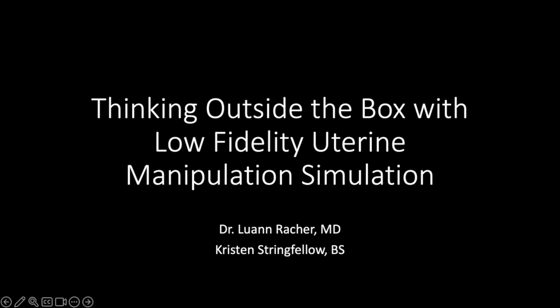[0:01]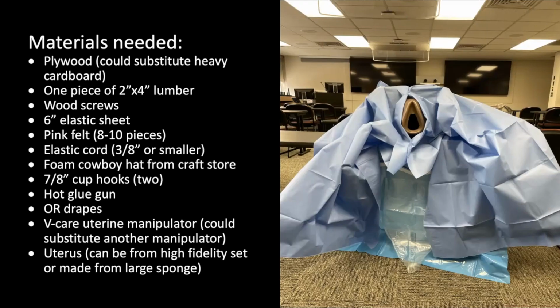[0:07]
In this video, we will demonstrate how to build a uterine manipulation simulation. The materials needed for this project include plywood that could also be substituted for a heavy cardboard, one piece of a 2 by 4 inch piece of lumber, wood screws, a 6-inch elastic sheet, pink felt that we used about
8 to 10 pieces, elastic cord that is 3/8 inch or smaller, a foam cowboy hat from the craft store, 7/8 inch cup hooks. You'll need 2 of these, one for each side of the simulator, hot glue gun, OR drapes, the V-Care uterine manipulator, or you could substitute for whatever manipulator you use at your institution, a uterus, and this could be from a high fidelity set or made from a large sponge if you do not have access to a high fidelity set.
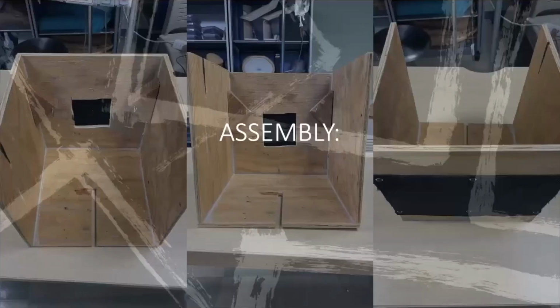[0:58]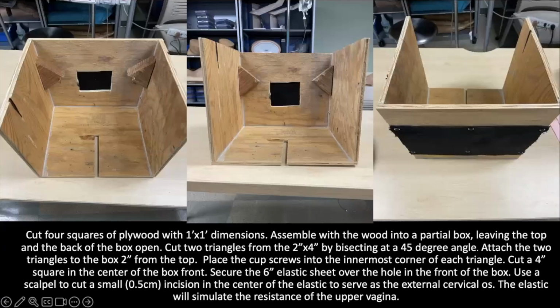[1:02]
To begin, we're going to go through the assembly of the box. To start the assembly, you're going to cut 4 squares of plywood with 1 foot by 1 foot dimensions, and then assemble the wood into a partial box, leaving both the top and the back of the box completely open. You'll then cut 2 triangles from the 2x4 by bisecting it at a 45-degree angle. Attach the 2 triangles to the box about 2 inches from the top of the box.
You're going to place the cup screws onto the innermost corner of each triangle, as depicted in the first and second image clearly. You'll then cut a 4-inch square into the center of the front of the box. You'll secure a 6-inch piece of elastic sheet over the hole in the front of the box, and then you're going to use a scalpel to cut a small hole. We did about a 1/2 centimeter incision into the elastic, and that's going to serve as the external cervical os. The elastic is going to be what simulates the resistance of the upper vagina.
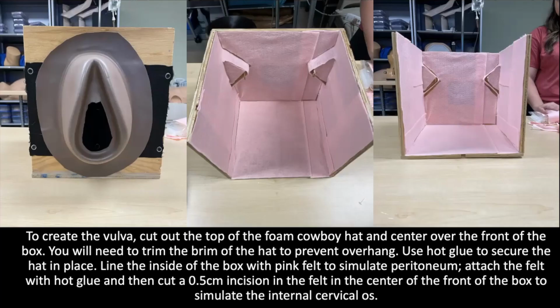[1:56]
In order to create the vulva, what you're going to do is cut the top out of the foam cowboy hat, and then you're going to center that over the front of the box. You will probably need to trim the edge or the brim of the hat in order to prevent any overhang, and then use hot glue to secure that hat in place. Line the inside of the box with pink felt, and this is what's going to simulate the peritoneum, and then attach the felt with hot glue, and you can also cut a 1/2 centimeter incision in the felt just like you did the elastic, in order to simulate the internal cervical os.
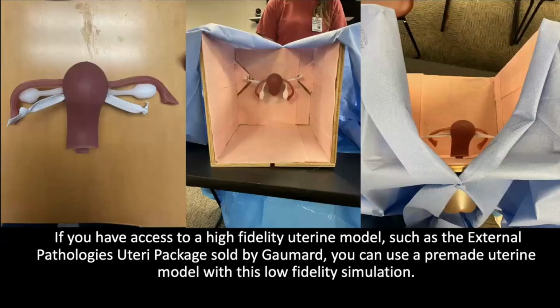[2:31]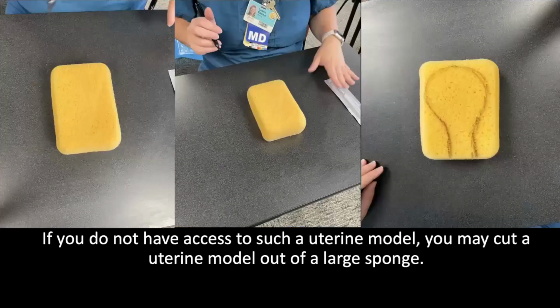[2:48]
If you have access to a high fidelity uterine model, such as the External Pathologies Uteri package that's sold by Gaumard, you can use that pre-made uterine model with this low fidelity box simulation as pictured in these images here. If you do not have access to that kind of uterine model, you can also cut a uterine model out of a large sponge like here in these images.
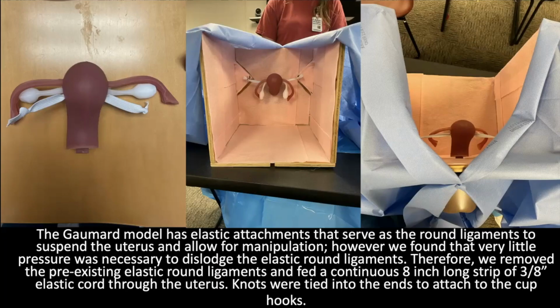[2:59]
The Gaumard model does have elastic attachments already in place that serve as the round ligament to suspend the uterus and allow for manipulation. However, we found that very little pressure was necessary to dislodge that elastic round ligament. So what we did is we removed that pre-existing elastic round ligament, and we fed a continuous 8-inch long strip of 3/8-inch elastic cord through that uterus. We tied knots on the ends, and that is what we used to attach to the cup hooks.
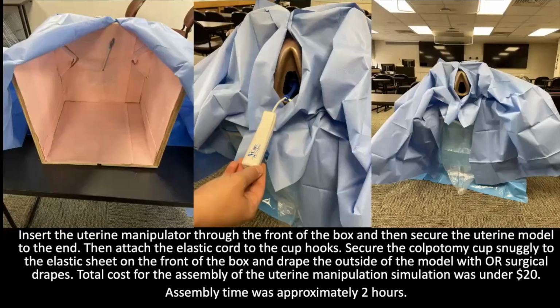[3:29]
You'll then insert the uterine manipulator through the front of the box and secure the uterine model to the end of the uterine manipulator. If you have not already attached the elastic cords to each of the cup hooks, you'll want to do that now as well. You'll then secure the cup snugly to the elastic sheet on the front of the box, and then drape the outside of the model with OR surgical drapes. The total cost for this assembly of the uterine manipulation simulation was under $20, and the assembly time took about 2 hours.
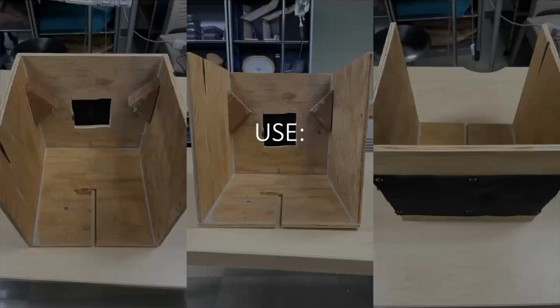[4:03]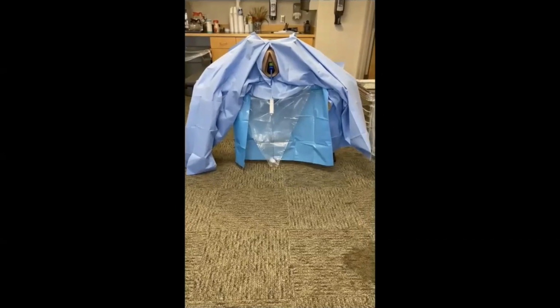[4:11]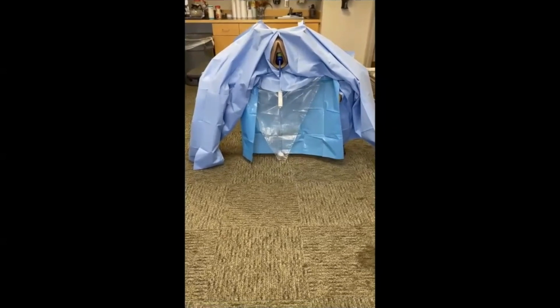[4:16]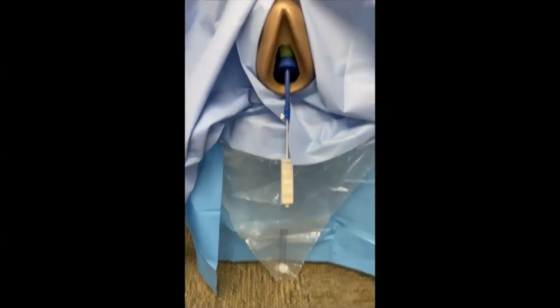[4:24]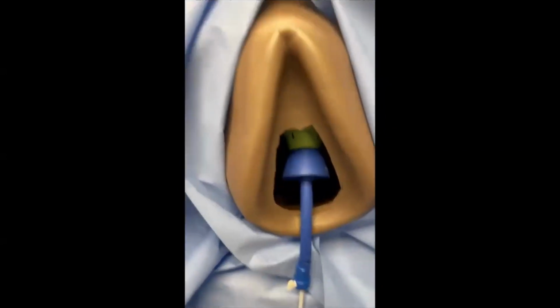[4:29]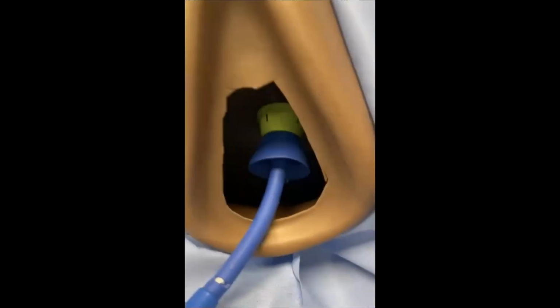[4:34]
The next part of the video is going to show how we actually use this uterine manipulation simulator. As you can see, this model is pretty realistic, even though it is made from inexpensive and commonly found items. Here you will see the vulva, which is made from that foam cowboy hat. You can then see inside the vulva that the uterine manipulator is able to go inside and into the elastic material, which is what simulates the resistance that you would feel in the operating room from the vaginal wall.
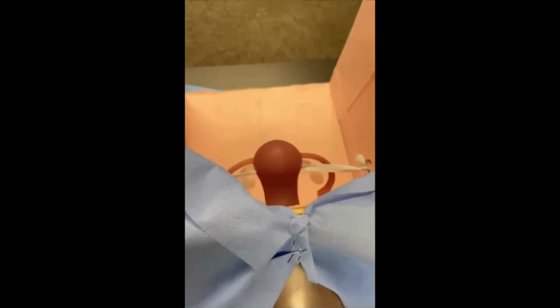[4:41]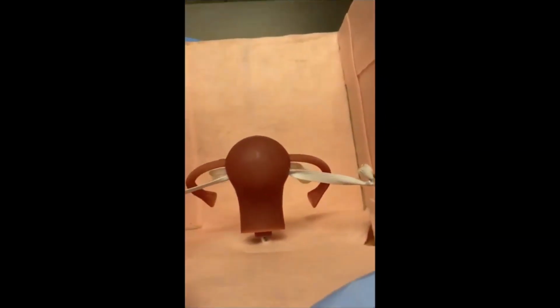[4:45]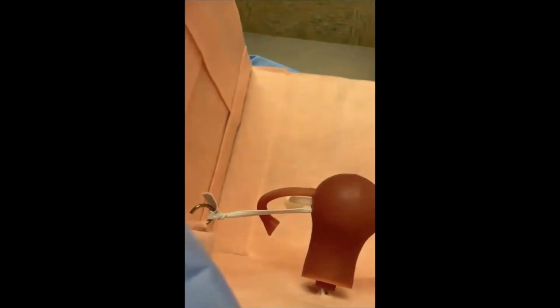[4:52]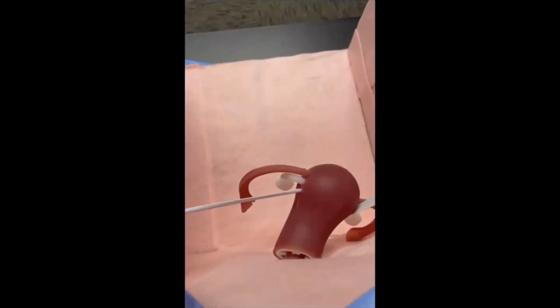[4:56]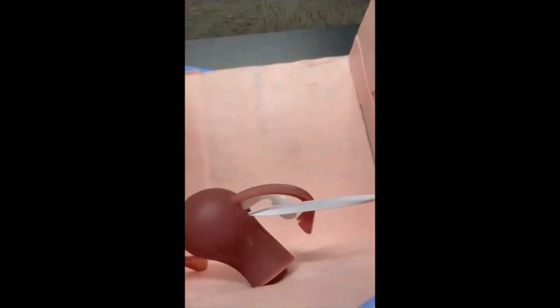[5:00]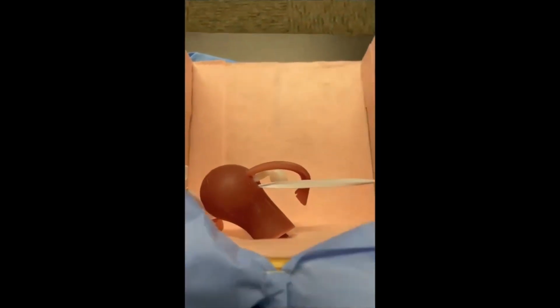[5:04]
Here we have our uterus. We're using the Gomard model in this video, but the sponge model with elastic attachments could easily be substituted if there was not access to the Gomard model. The elastic is what represents the round ligaments that are suspended in the uterus by the hooks on the triangular pieces of wood. The student or resident practicing can fully use the manipulator to clearly see and practice manipulating the uterus to expose different angles that would be commonly needed for visualization in the operating room.
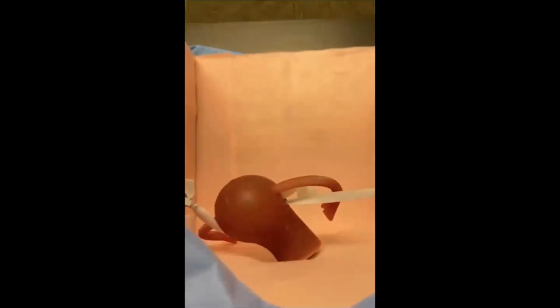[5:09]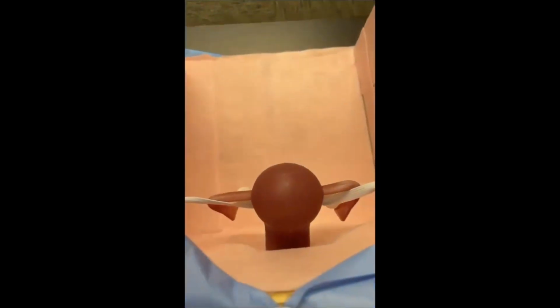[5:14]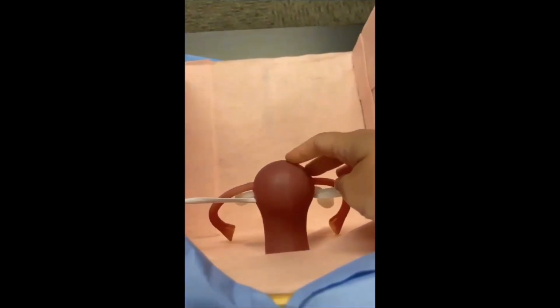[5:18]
The participant can watch themselves, see what they need to improve on, the amount of force needed to turn and manipulate the uterus, and this also allows for getting real-time feedback from instructors in a safe and reliable environment.